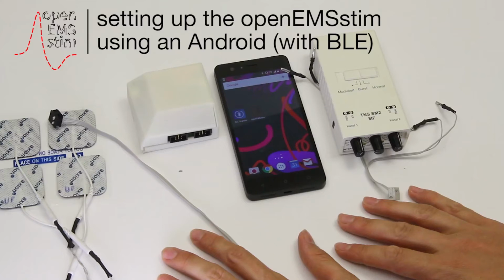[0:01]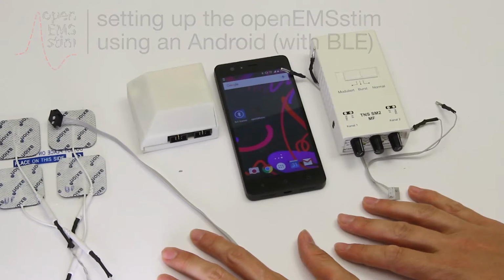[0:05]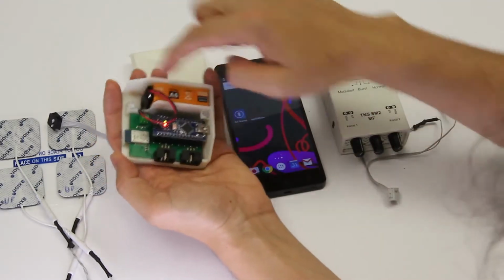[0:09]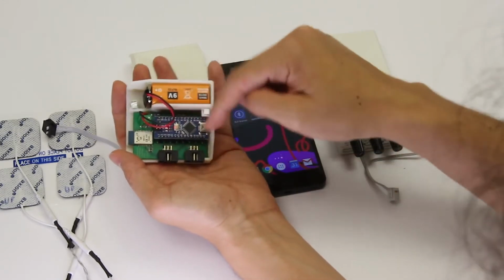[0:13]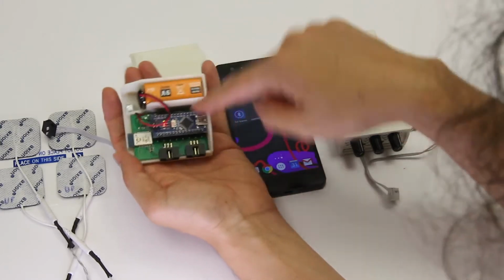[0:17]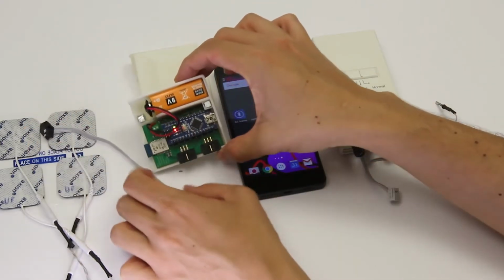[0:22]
In this tutorial, I'll teach you how to set up the openEMSstim board using an Android device with Bluetooth low energy. So here's the openEMSstim board already plugged into a 9-volt battery. As you can see, the LEDs on the Arduino indicate power. If you need to power it, just plug in that battery plug connector, okay? We're gonna leave that open for now because those LEDs are actually very useful for debugging.
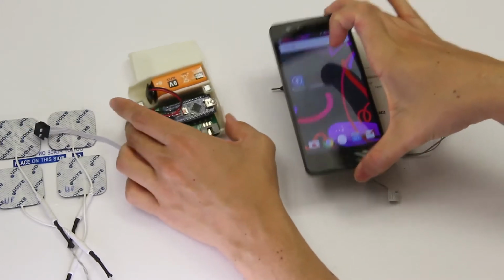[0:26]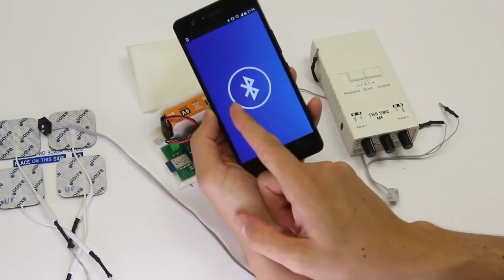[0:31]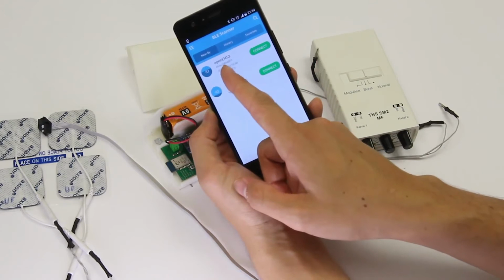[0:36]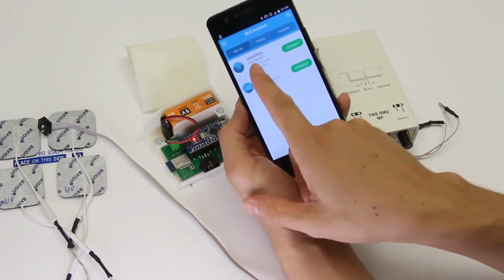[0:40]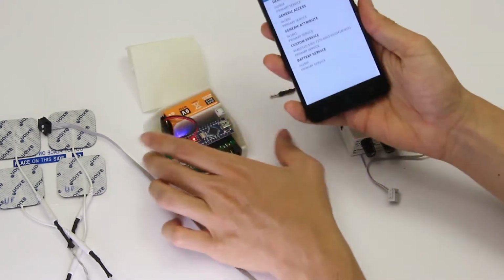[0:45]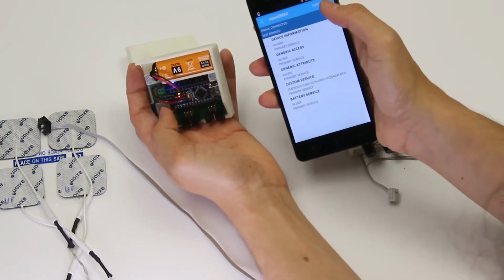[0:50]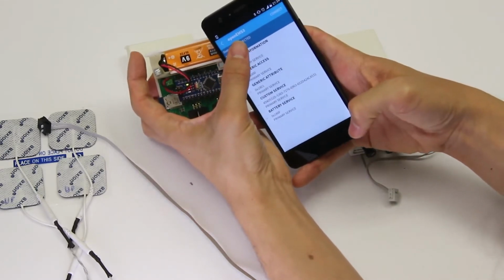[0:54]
I'm here on my Android phone starting an app called BLE Scanner, Bluetooth Low Energy Scanner. This is something that I got from the Google Play Store. As you can see, it scans the surroundings and it finds a board called openEMS3. You can actually tap and say connect. And look at that, there's a blue LED on the board that just lit up. If I say disconnect, that blue LED goes off. So the connection between the board and our Android device is verified and it works.
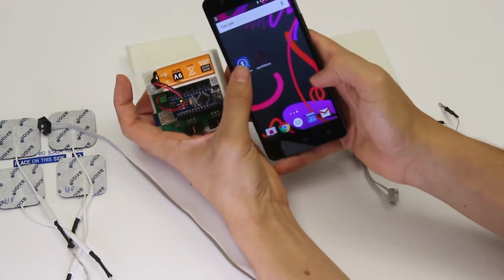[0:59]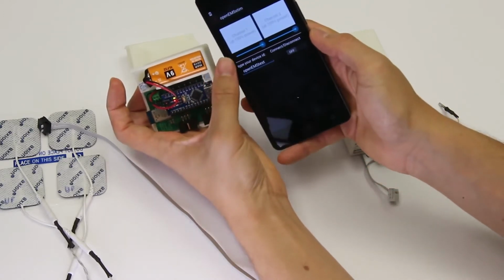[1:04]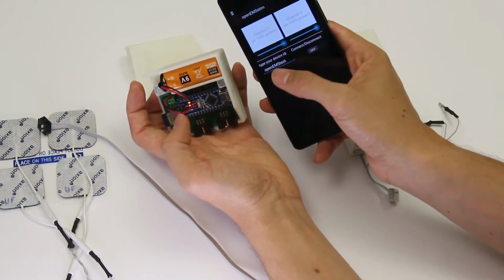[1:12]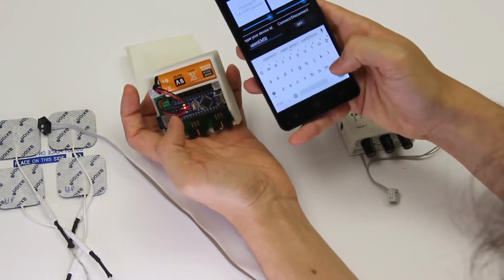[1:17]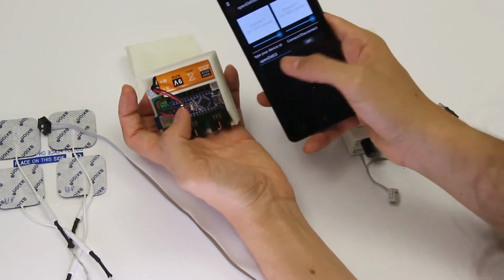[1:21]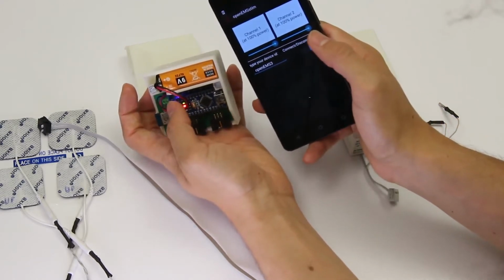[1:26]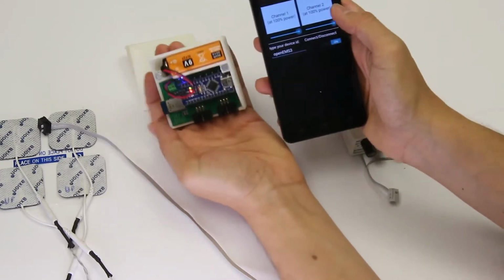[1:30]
Now the next step is to open the EMSstim control app. So as you can see here, it says some different string for the device id. We have to change that. So now we know that our device is called openEMS3. We're just gonna type that. So I'm gonna type openEMS3. Now I can actually click on the toggle and look at that, it turns blue. That means that everything is connected and it actually works.
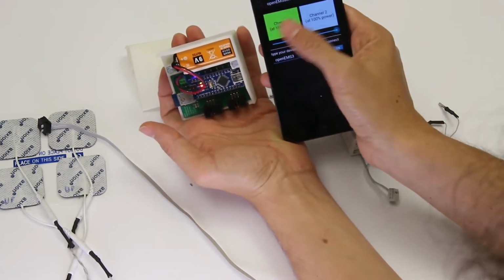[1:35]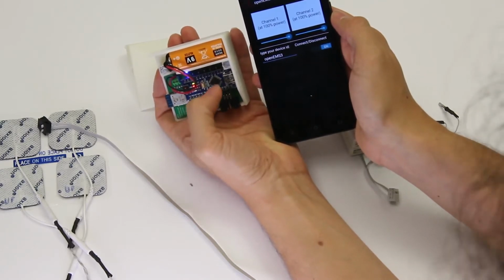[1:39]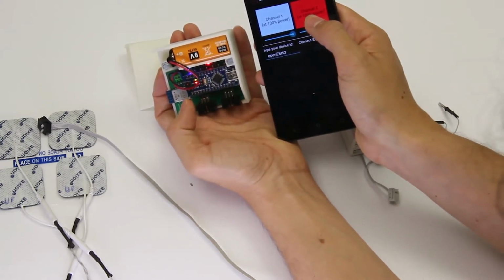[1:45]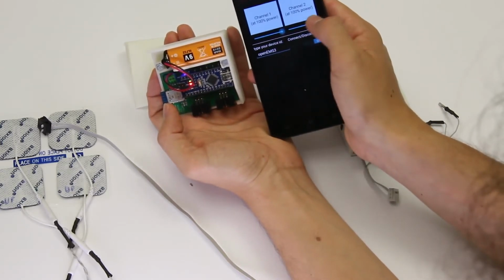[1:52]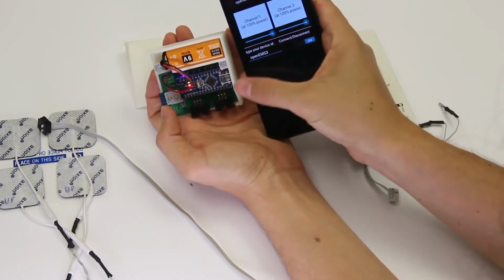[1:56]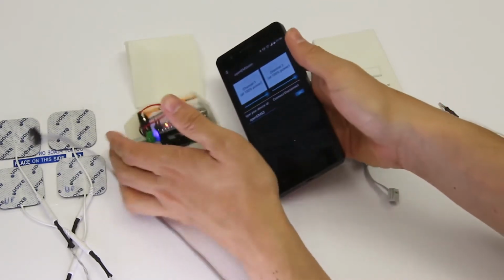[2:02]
So if I tap on the channel buttons, that opens the EMS channels and that's actually working. You can see that on the board there are matching colors. So if I tap on the right channel, it turns red and there's a red LED for that. If I tap on the other side on the green, there's also a green LED for that. So everything is working. By the way, these are the intensity sliders, and for now you just want to keep them maximized at 100%. So that's great. Everything is working right now with our board, and we can actually disconnect it and leave it like that for now.
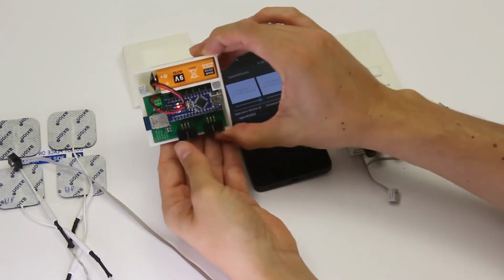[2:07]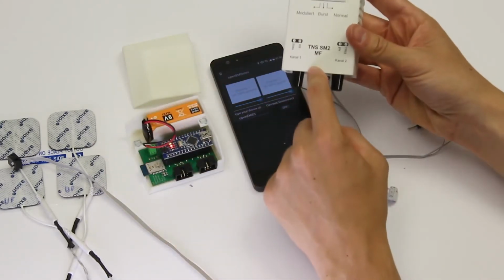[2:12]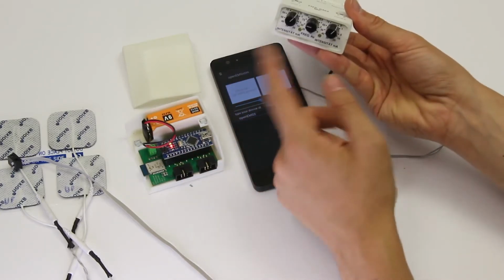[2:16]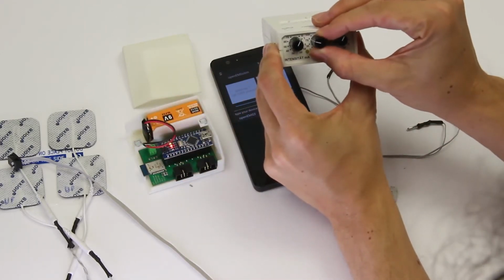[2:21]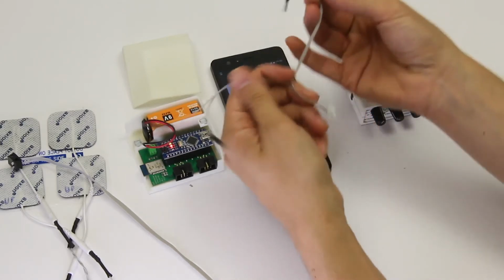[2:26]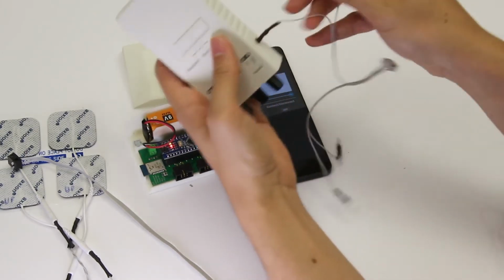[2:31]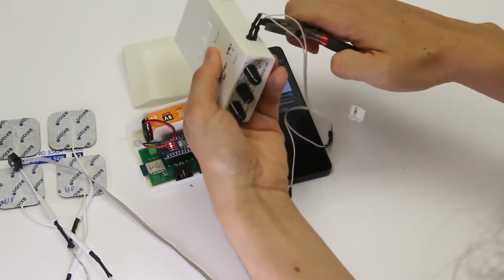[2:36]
So now we have to set up the openEMSstim board with the off-the-shelf muscle stimulator. If you don't know how to use this thing, please refer to another video that we have that shows you how to use that. So for now, we're going to keep the frequency at 70 Hertz if your stimulator allows you to check that. And we're going to connect a cable to that. This connects to the openEMSstim board and has obviously two channels. So I'm connecting the right channel and make sure those plugs fit nicely and are not loose. If they're very loose, just use some tool to actually put them in.
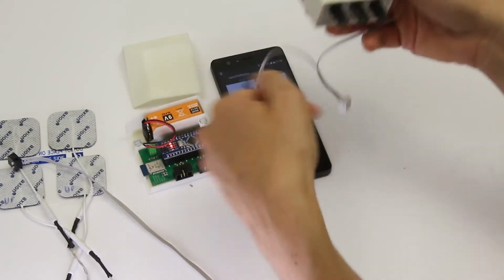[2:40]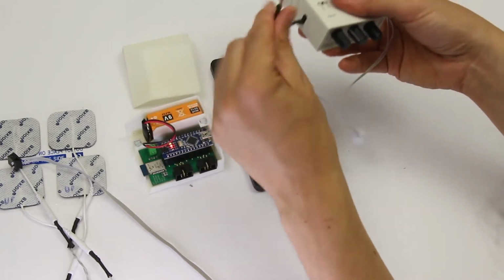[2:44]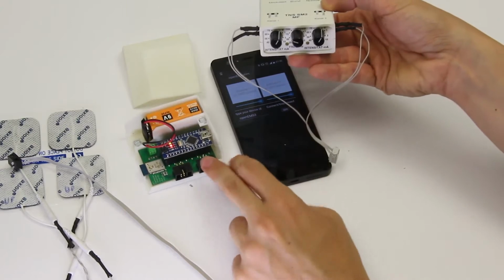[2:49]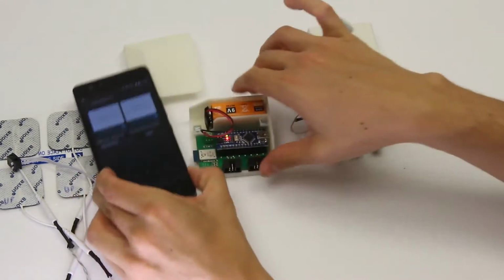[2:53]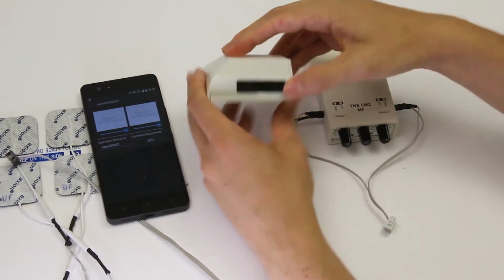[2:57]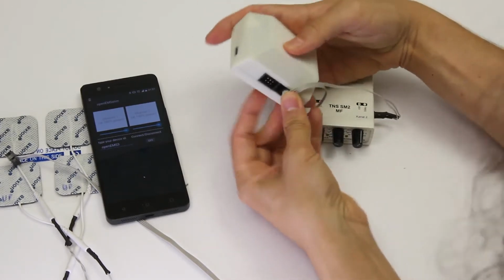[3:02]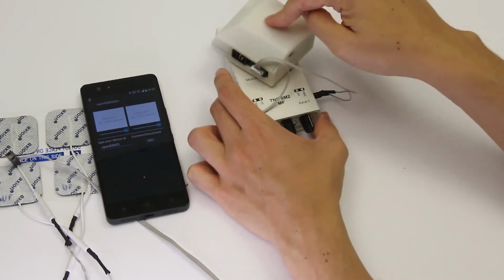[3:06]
So I have two channels connected and I want to connect those two channels to the openEMSstim board. And that connector is going to go into the rightmost inlet of the openEMSstim board. By the way, if you want, now you can actually close the lid. I've connected it and we have connection from muscle stimulator to openEMSstim board.
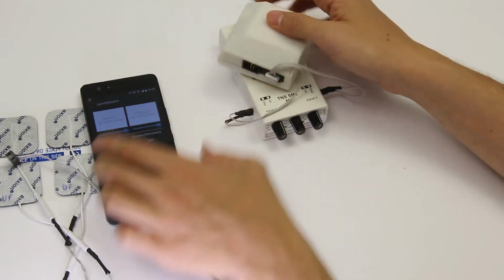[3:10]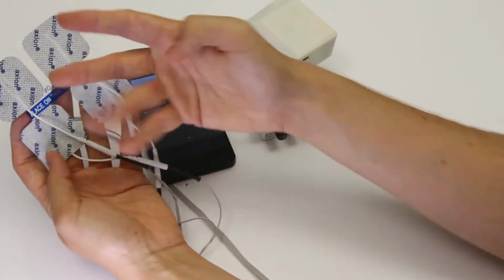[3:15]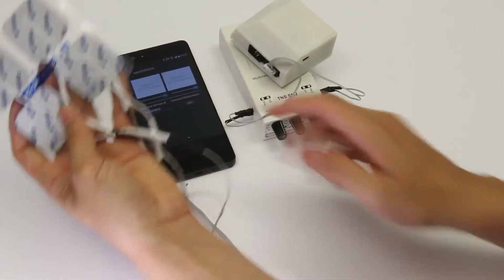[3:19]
Now on the leftmost channel, we have to connect the electrodes. I have here four pads. That means two channels, okay? Four pads is two channels, and I want to connect those to the openEMSstim board, and those are going to receive the impulses from the muscle stimulator.
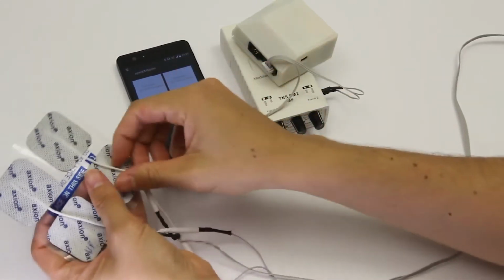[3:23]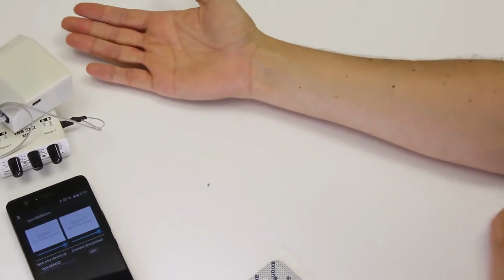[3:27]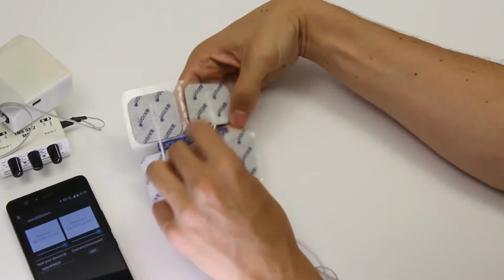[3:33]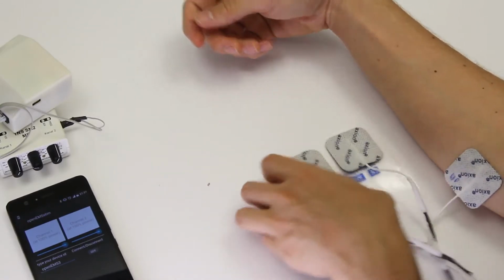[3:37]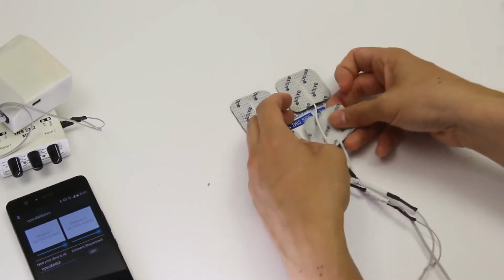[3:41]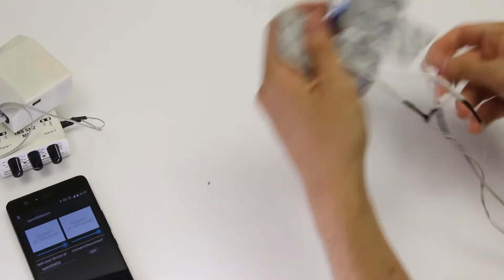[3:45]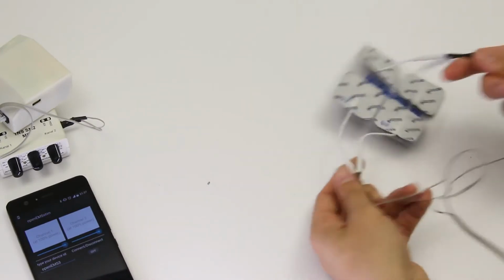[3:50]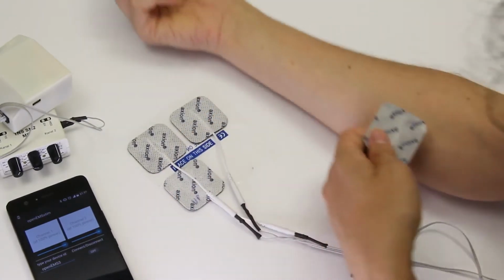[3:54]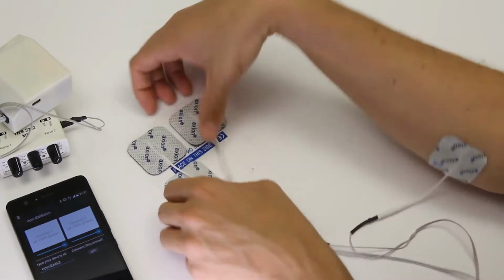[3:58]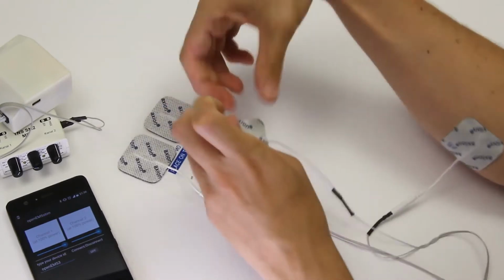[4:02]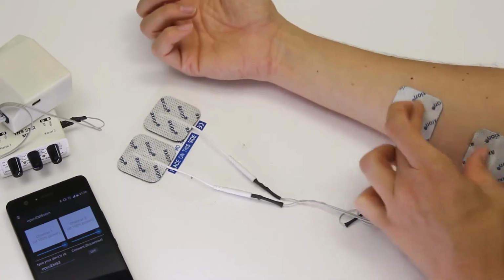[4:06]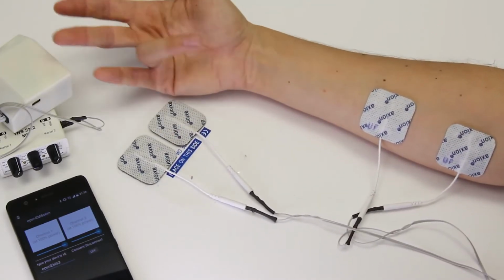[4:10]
So the first thing I'm going to do is grab two pads, and I'm going to put them here on my palm flexor. That's this muscle here that I'm showing you. The first electrode goes to the base of the muscle, that's here, and just a few fingers away, about 3 to 4 fingers away, I'm going to put the other one. By the way, make sure your cables are not tangling like what's happening to me right now. So just make sure everything is easy to access and they spread out nicely. So one electrode on the base of the muscle of the palm flexor and just 2 or 3 fingers away, slightly more upwards, you're gonna place the second electrode. Okay, so that's the muscle that moves the palm inwards, actually moves the wrist, but also moves that finger muscle there.
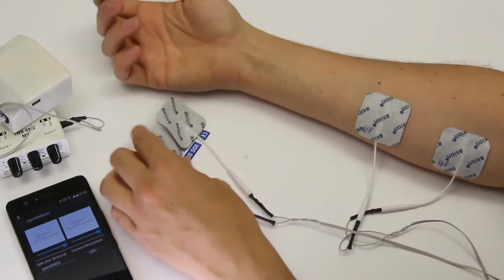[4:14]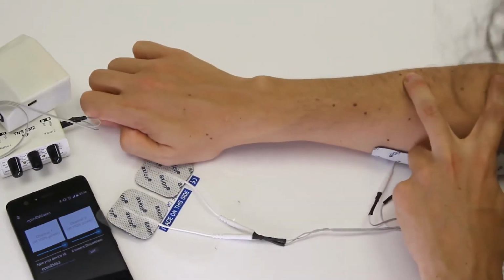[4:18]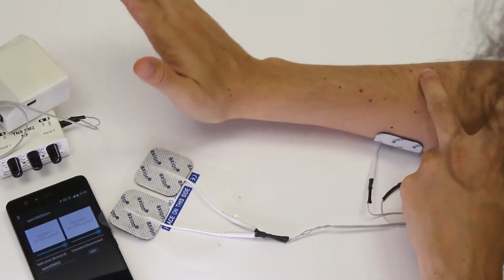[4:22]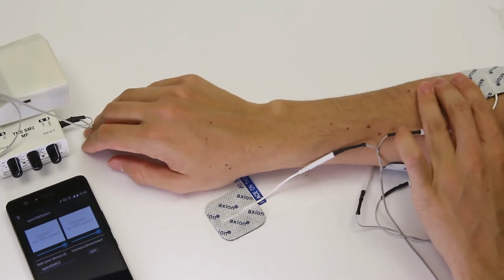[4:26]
And on the other side of your hand, we're going to place on the palm extensor muscle two more pads. That's one more EMS channel. And that's the muscle that moves my palm upwards. So base of the muscle is there and 3 fingers away, you place the other electrode.
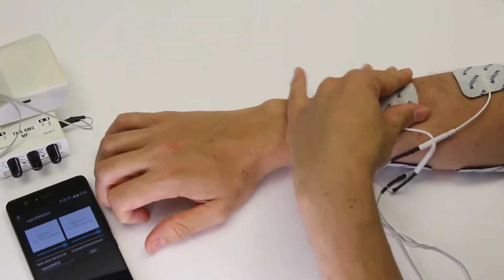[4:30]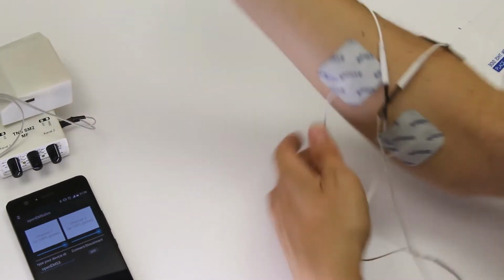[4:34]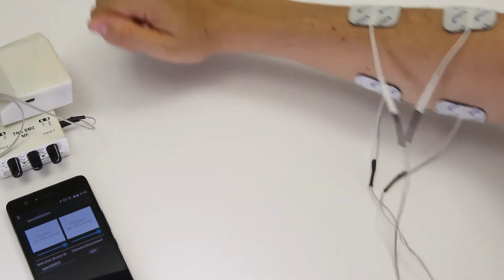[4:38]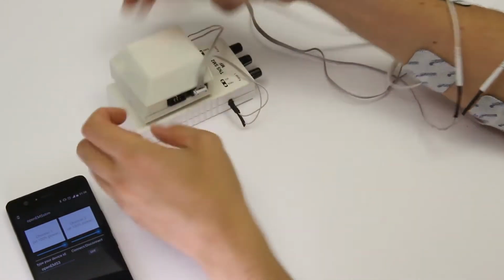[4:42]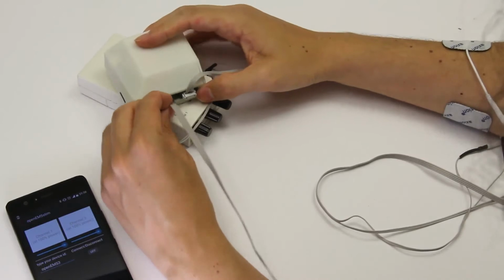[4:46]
Make sure two cables are going to the same channel. Don't wire them up wrong. And that goes into the leftmost inlet of the openEMSstim board. That's the inlet closest to the Bluetooth chip if you open the board to check it out. So now we have everything connected.
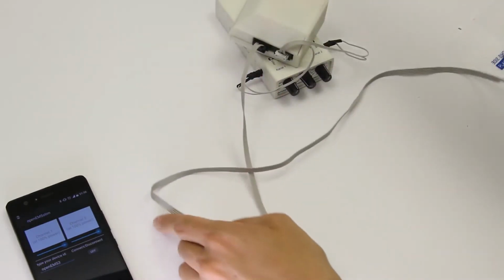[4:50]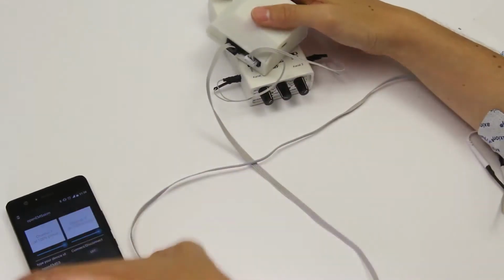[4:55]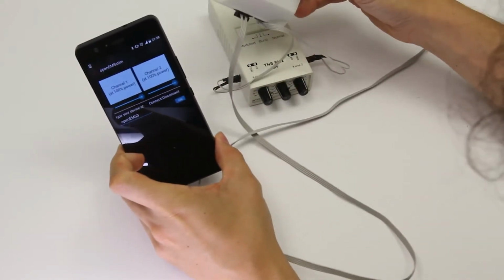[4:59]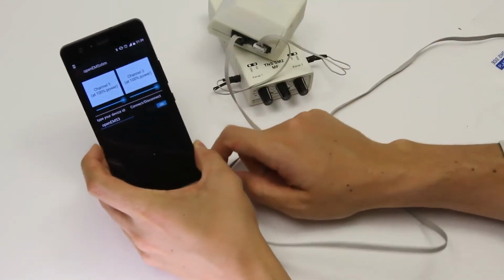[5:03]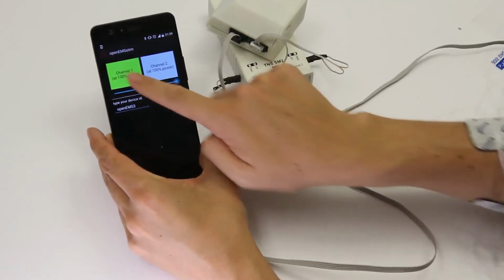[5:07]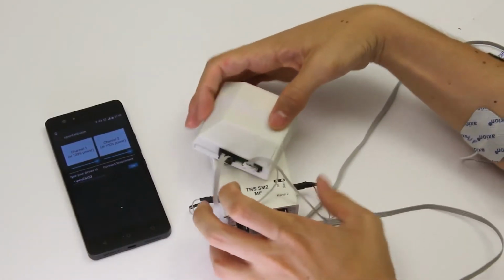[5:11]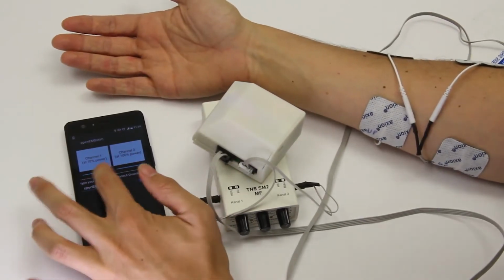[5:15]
My arms are connected. And now I can reconnect the openEMSstim board to the Bluetooth. Now I have two channels, and two channels also mapped on the other one. I have the EMS device off for now, but now I'm going to turn the first channel on. So I'm going to turn the rightmost channel on, and I make sure the intensity slider is on maximum, because you're trying to calibrate what is the maximum pain-free and comfortable setting for you. So you want to have that maximized.
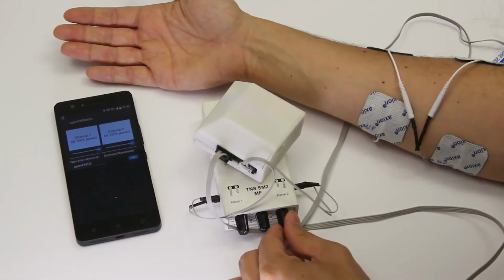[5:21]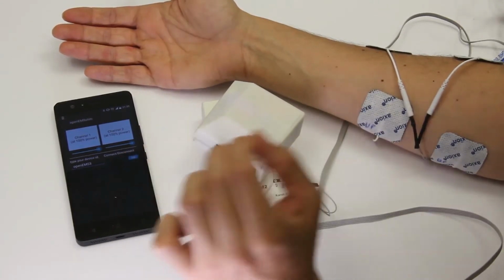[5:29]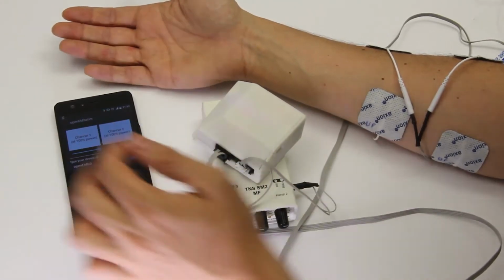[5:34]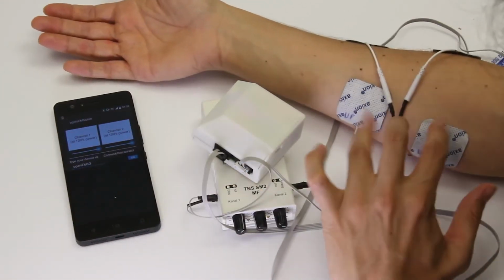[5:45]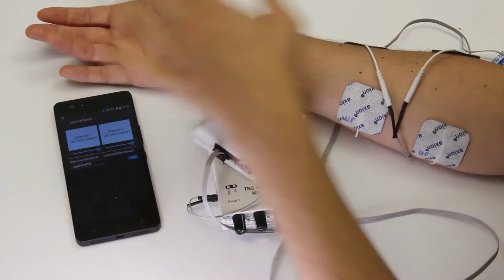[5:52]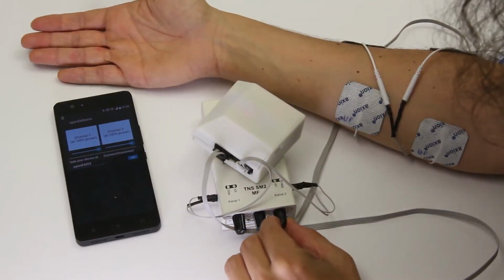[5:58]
I open the EMS channel and I very gently, milliamp by milliamp, rotate the dial the least possible I can, and I just tap opening that channel. I don't feel anything yet. Just a little bit more. I don't feel anything yet. I'm starting to feel a bit of a tingling sensation, so I know if I put just a little bit more, we'll reach some muscle tissue and elicit sufficient motor neurons to actually do a contraction on that finger. So I'm going to put a little bit more, and you see my finger move just a tiny bit.
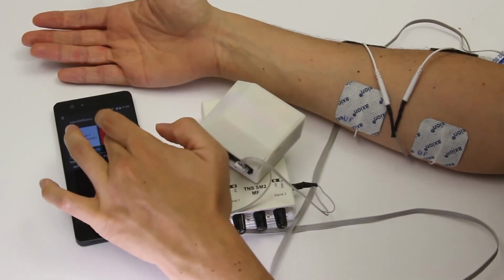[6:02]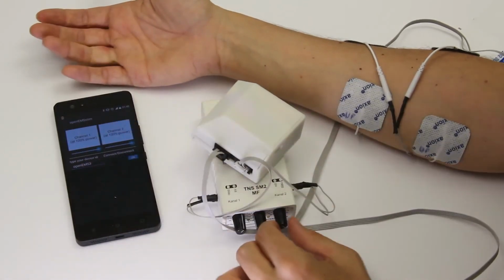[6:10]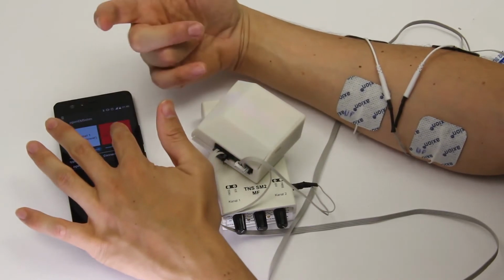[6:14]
A little bit more, a bit more motion, a little bit more, there we go. Almost one finger curl. There we go. So I have finger contraction at this value. But I can continue exploring, and a little bit more, I have the full palm contraction. So that's like fingers and also the palm flexor. Okay, so I can also play with the dial now, the intensity, and I can reduce that intensity just a little bit.
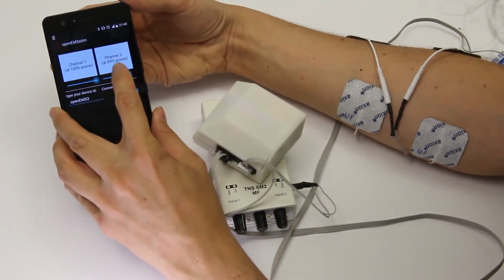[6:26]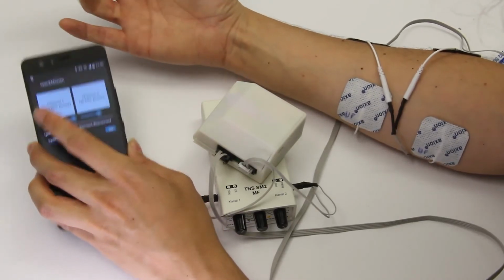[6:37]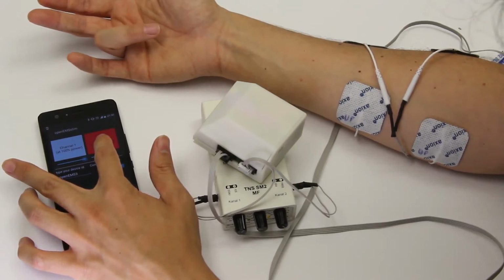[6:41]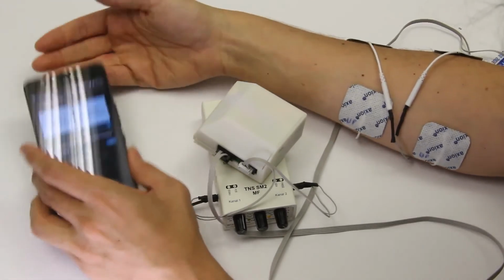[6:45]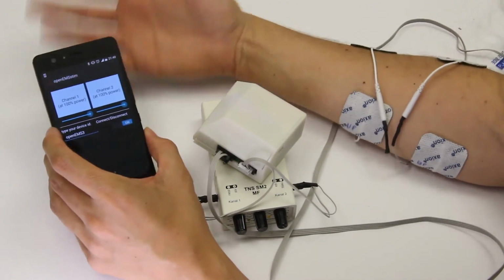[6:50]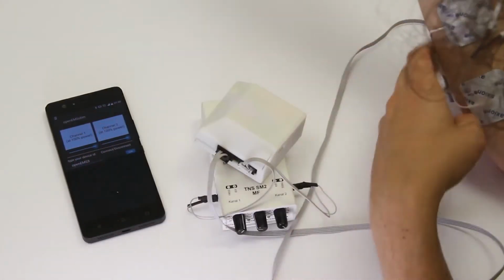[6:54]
And maybe at something like 80%, still too powerful. I just keep on going lower and lower. And there we go. At this intensity, I have only slight finger contraction. But at maximum intensity, I have the full hand contraction. So this is something you can try here, and then you can port it into your application, and you know which values kind of work for you. All right, now we're going to do the same for the other channel.
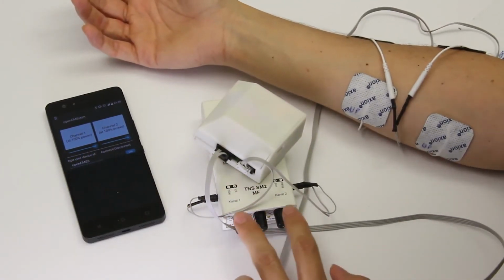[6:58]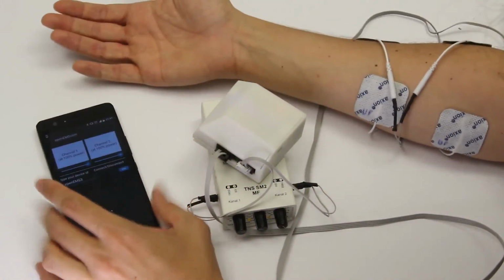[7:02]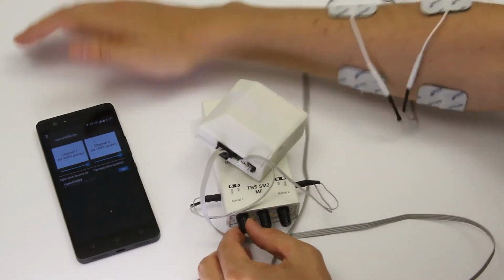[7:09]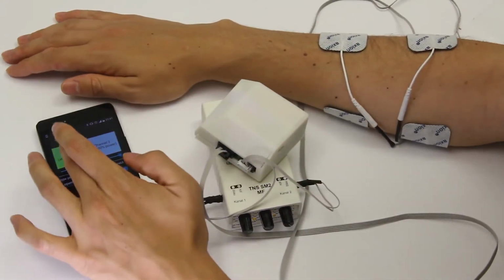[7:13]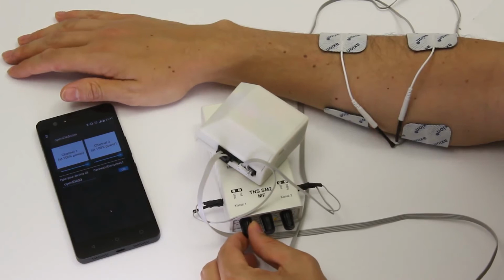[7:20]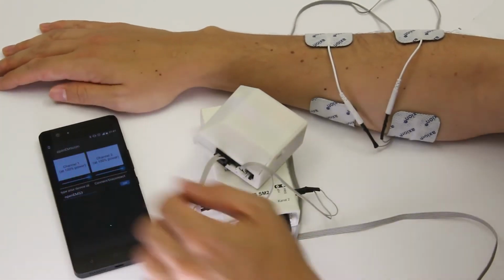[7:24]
Okay, so I'm gently opening the channel, the EMS channel. And I'm opening the EMS channel to the left, and I feel nothing. I'm putting 1 milliamp more, I feel nothing. Another milliamp, and so forth. I just do it as slow as possible. And at some point, I'm going to feel a tingling sensation as the electricity passes through my skin receptors. That's just normal. I'm opening the channel, putting 1 more milliamp, very slowly. Do this very slowly if it's your first time. Even if it's not your first time, just keep on doing that.
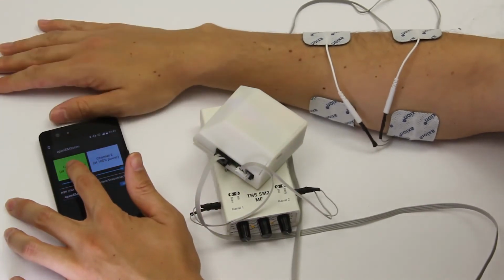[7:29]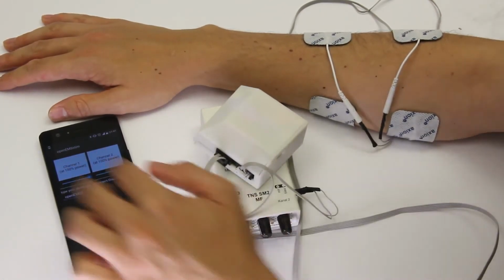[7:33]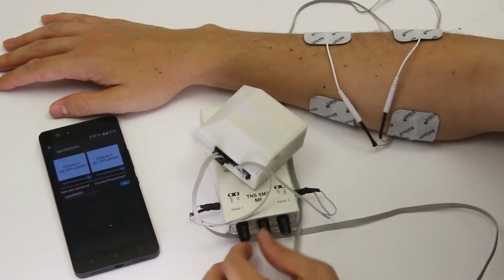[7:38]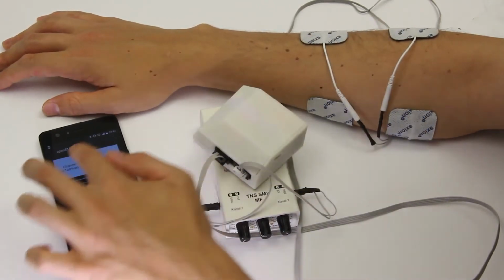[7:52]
I actually feel the tingling already, but it's not sufficient to move my hand. I keep on feeling tingling, but no muscle motion. That's also normal on the palm extensor, because this part of the skin is a bit thicker and actually has hair in my case, which means that I'll feel more tingling for a longer period of time, and the contraction comes later. So I just keep on putting milliamp by milliamp, feel that tingling, I feel that the muscle is almost moving, feel it now. Okay, it's moving slightly, needs a little bit more.
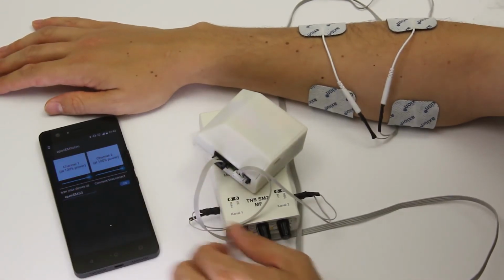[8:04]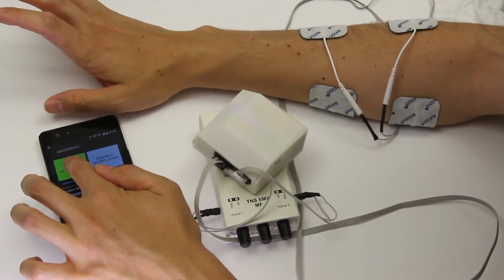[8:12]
There we have, that's a small contraction, that's a bit bigger, I can still put more, I'm still comfortable, it's totally pain-free at this point. There we go, that's a nice contraction. I can put just 1 more milliamp to be faster. There we go, that's pretty fast now. All right, that feels great. Again, I can play with the intensity. So I'm reducing the intensity to find a smaller value that still works.
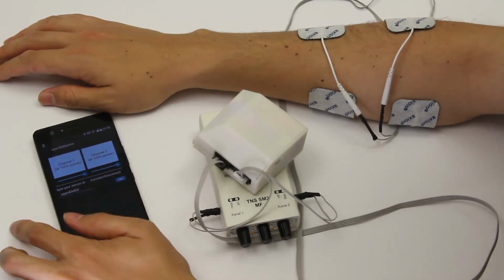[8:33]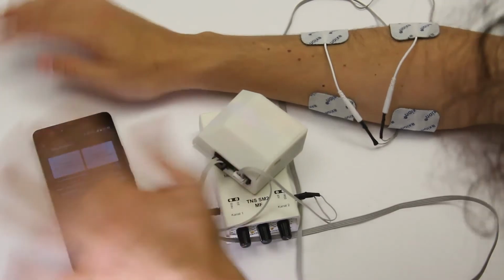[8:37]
And you can imagine if you're playing a game or creating a virtual experience, this could be like a slight touch and the other one is like a stronger sensation. So that's all set up. I'm just turning it off. This is how you use it.
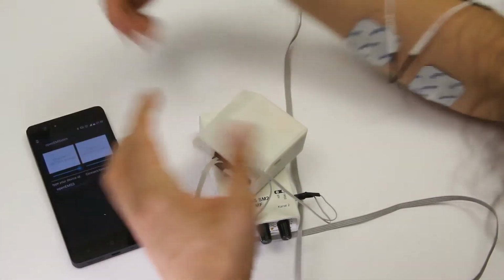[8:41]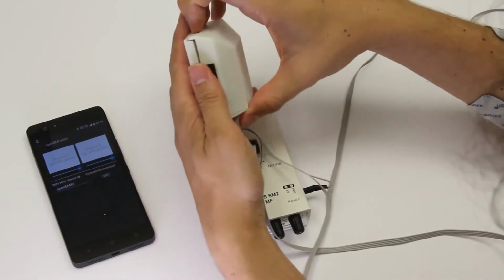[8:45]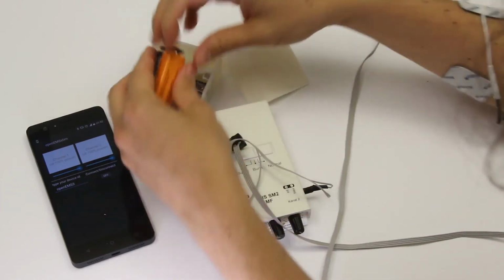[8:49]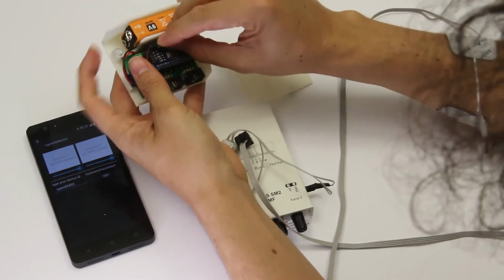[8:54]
To turn off, just Bluetooth off, cables out. If you actually want to power it off and save some battery, that's simple. Just take the plug away and you can actually keep it nice and tucked between the Arduino and the base plate over there of the battery.
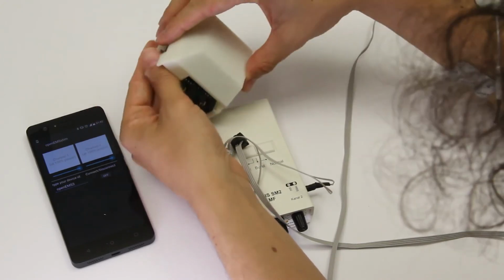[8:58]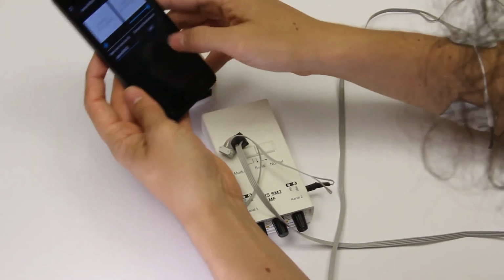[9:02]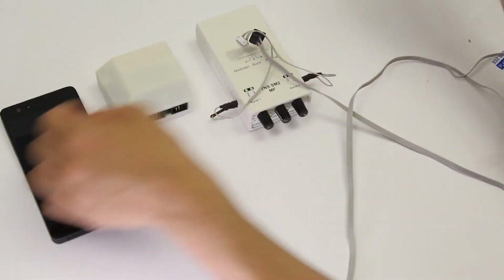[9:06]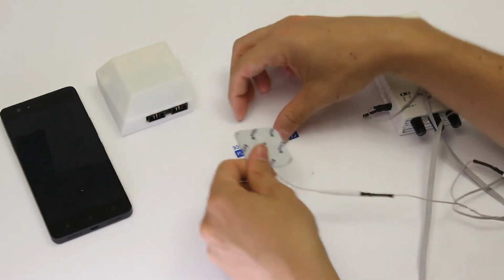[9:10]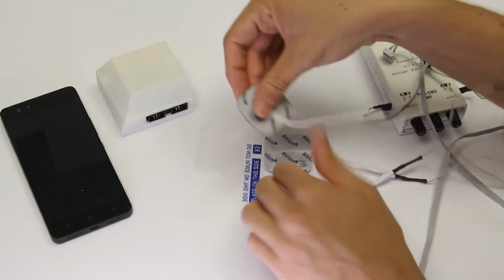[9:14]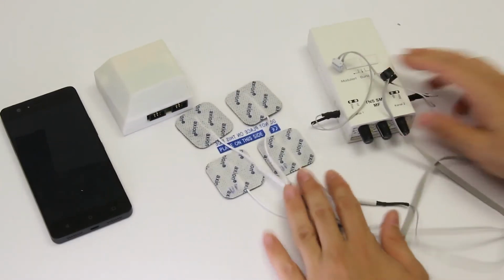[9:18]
Take the EMS pads away and place them on the right side of the plastic pad. There's a right side and a wrong side, it's identified there usually. And by placing them on the right side, they will actually stay stickier for longer and they'll keep fresher.